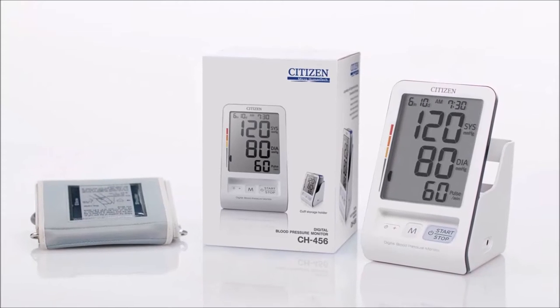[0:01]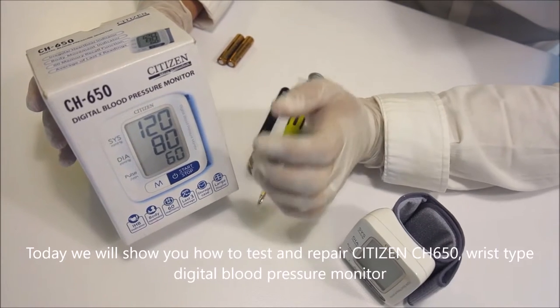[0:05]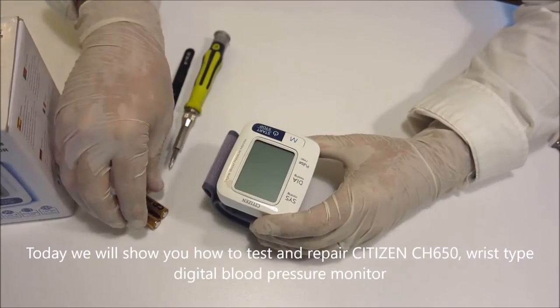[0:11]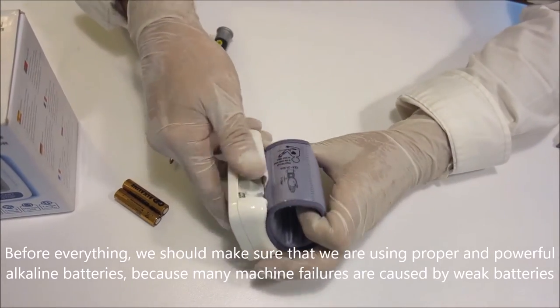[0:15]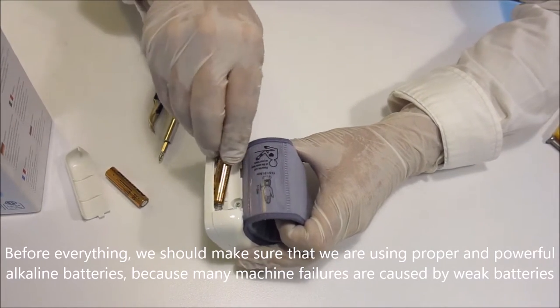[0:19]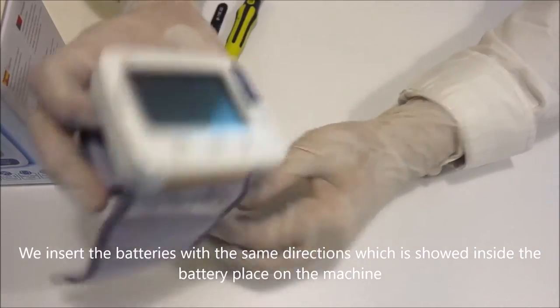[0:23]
Today we will show you how to test and repair the Citizen CH650 wrist type digital blood pressure monitor. Before everything, we should make sure that we are using proper and powerful alkaline batteries, because many machine failures are caused by weak batteries. We insert the batteries in the same direction as shown inside the battery compartment on the machine.
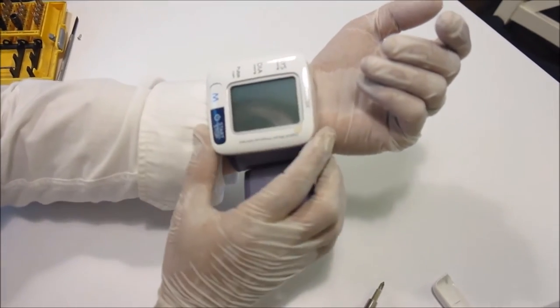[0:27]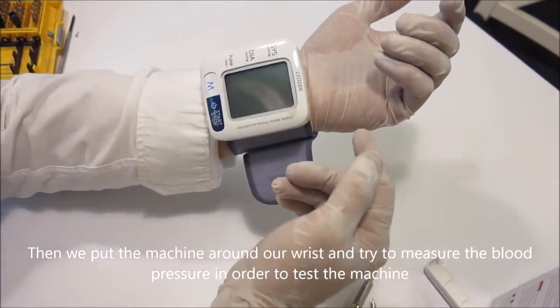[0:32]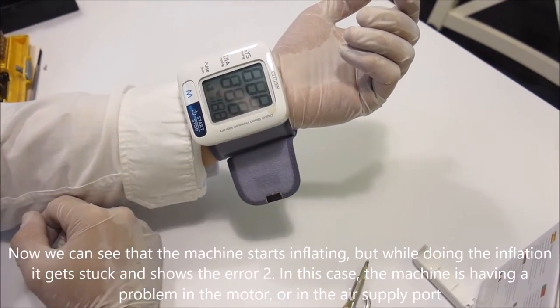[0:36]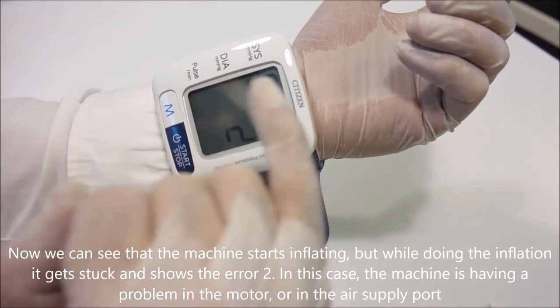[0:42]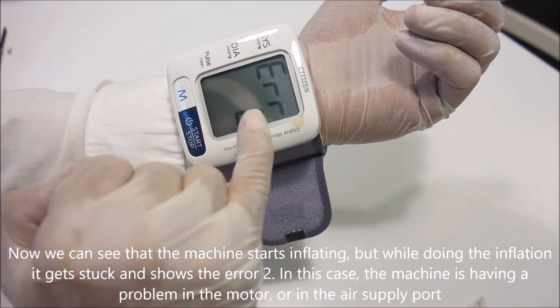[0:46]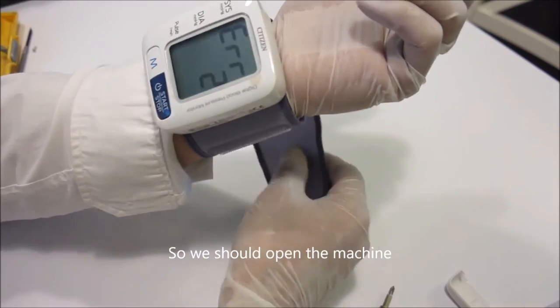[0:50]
Then we put the machine around our wrist and try to measure the blood pressure in order to test the machine. Now, we can see that the machine starts inflating, but while doing the inflation it gets stuck and shows the error 2. In this case, the machine is having a problem in the motor, or in the air supply port. So we should open the machine.
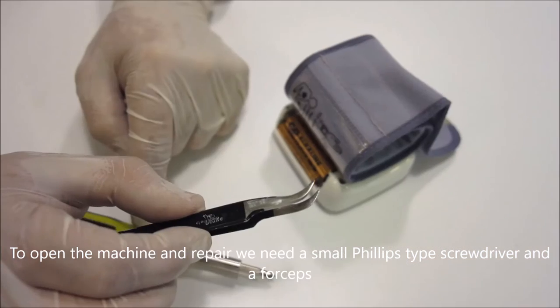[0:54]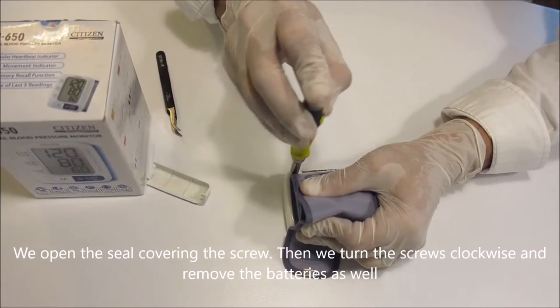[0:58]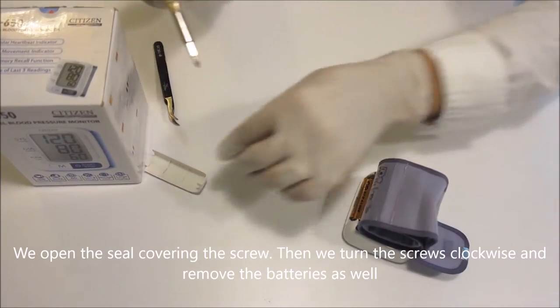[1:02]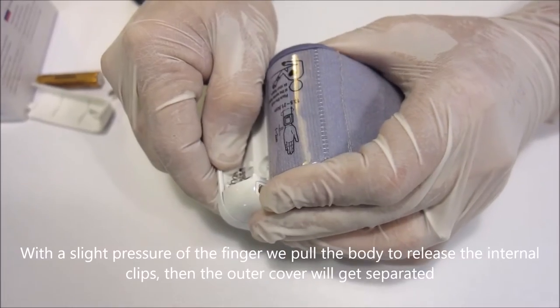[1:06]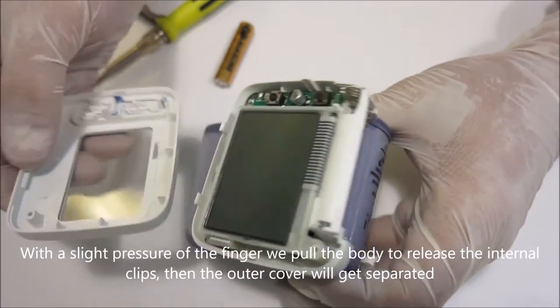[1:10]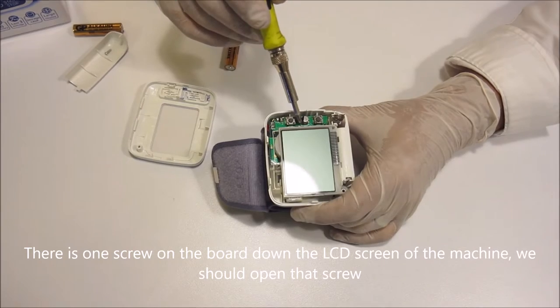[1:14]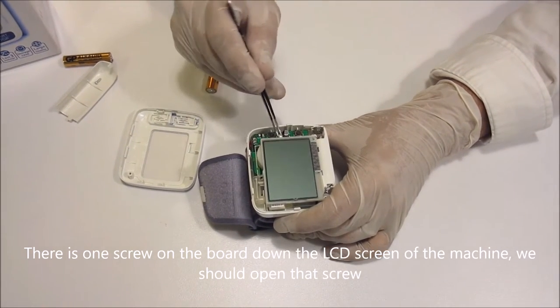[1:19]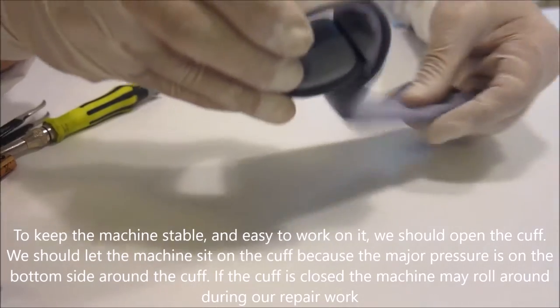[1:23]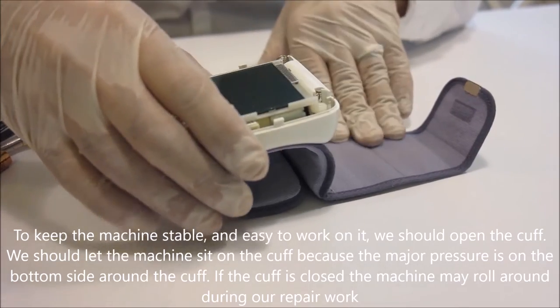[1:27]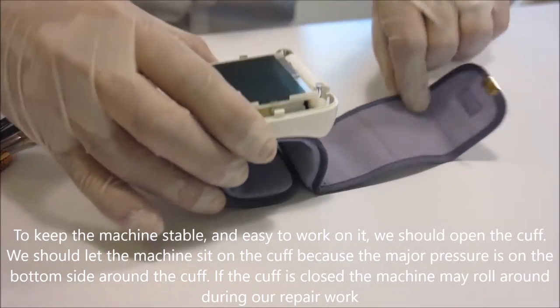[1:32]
that screw. To keep the machine stable, and easy to work on, we should open the cuff. We should let the machine sit on the cuff because the major pressure is on the bottom side around the cuff. If the cuff is closed the machine may roll around during our repair work.
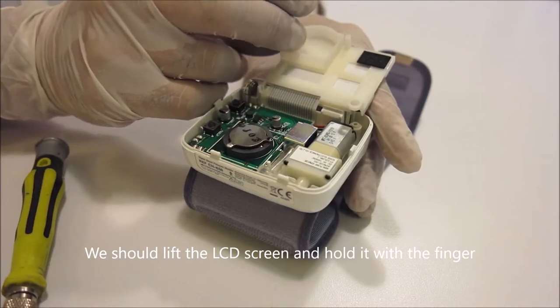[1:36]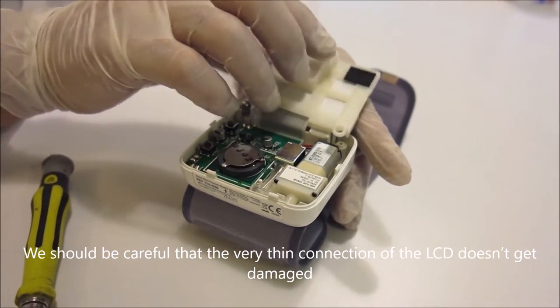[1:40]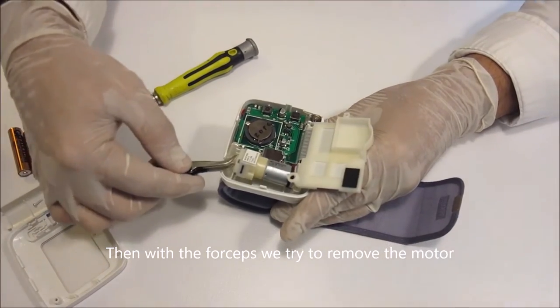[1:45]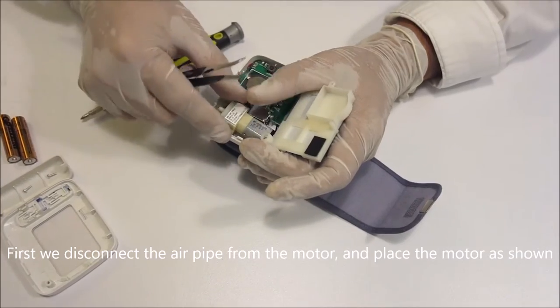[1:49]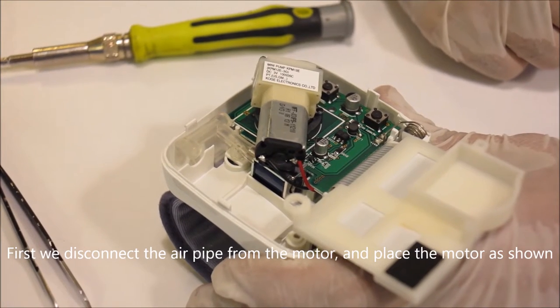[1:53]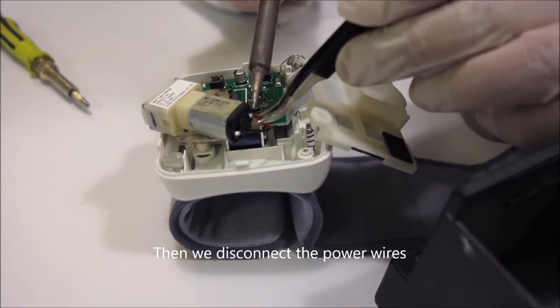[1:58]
We should lift the LCD screen and hold it with the finger. We should be careful that the very thin connection of the LCD doesn't get damaged. Then, with the forceps, we try to remove the motor. First we disconnect the air pipe from the motor, and place the motor as shown. Then, we disconnect the power wires.
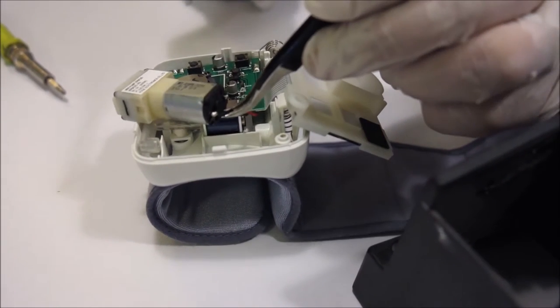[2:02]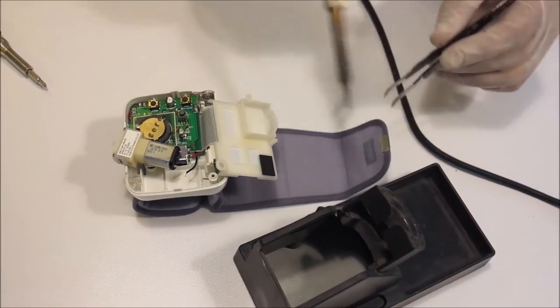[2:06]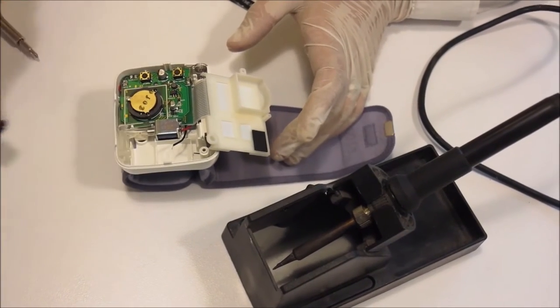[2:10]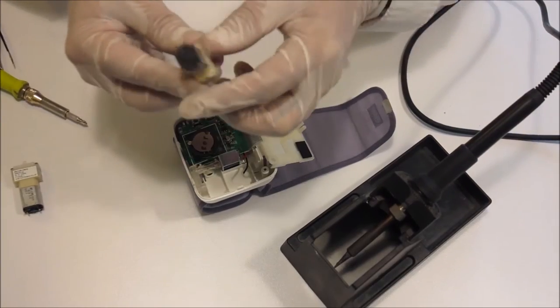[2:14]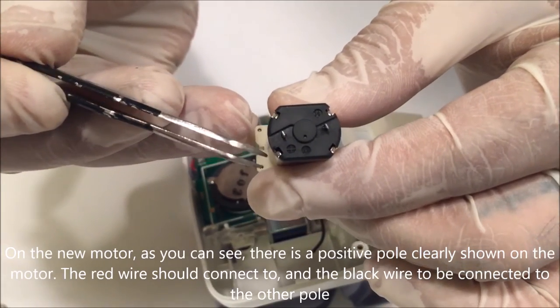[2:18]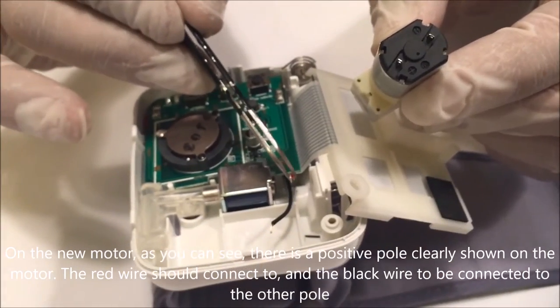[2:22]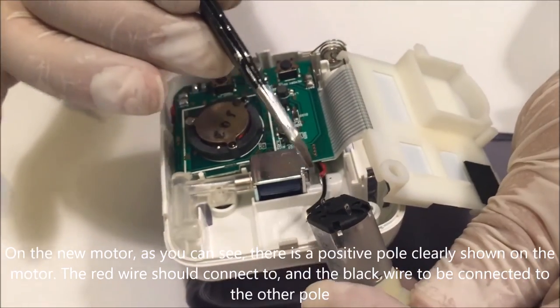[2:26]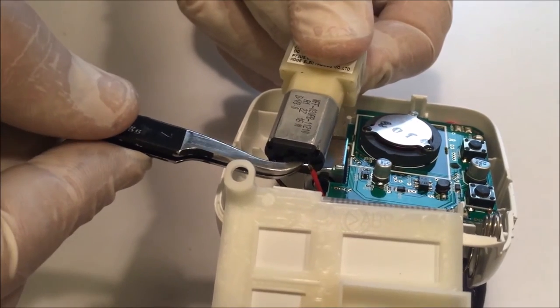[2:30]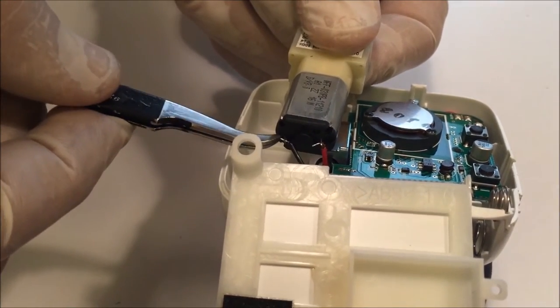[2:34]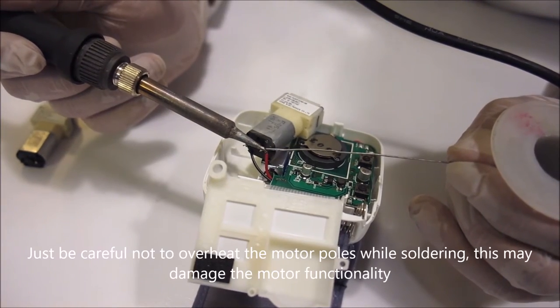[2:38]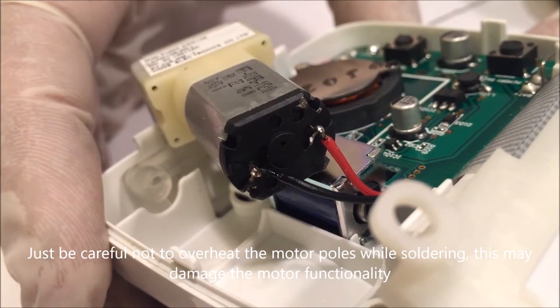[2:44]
On the new motor, as you can see, there is a positive pole clearly shown on the motor. The red wire should connect to it, and the black wire to be connected to the other pole. Just be careful not to overheat the motor poles while soldering, this may damage the motor functionality.
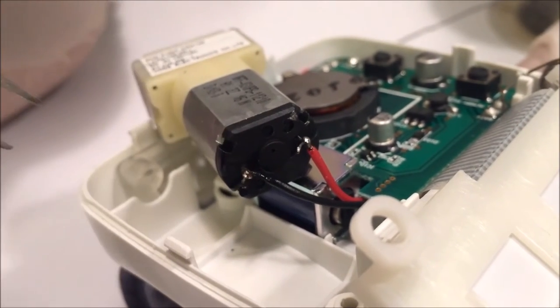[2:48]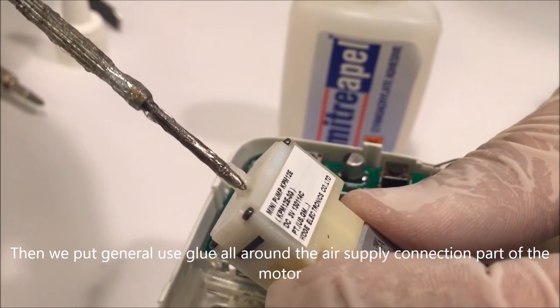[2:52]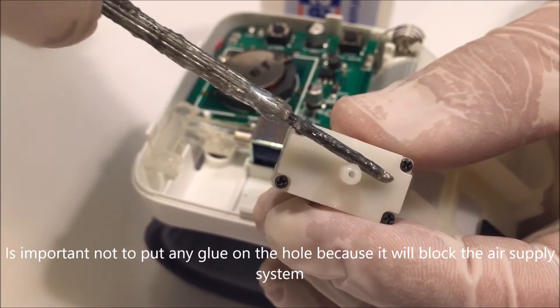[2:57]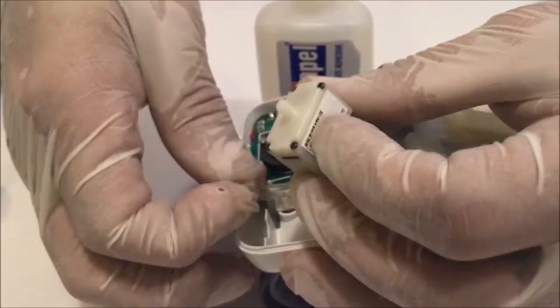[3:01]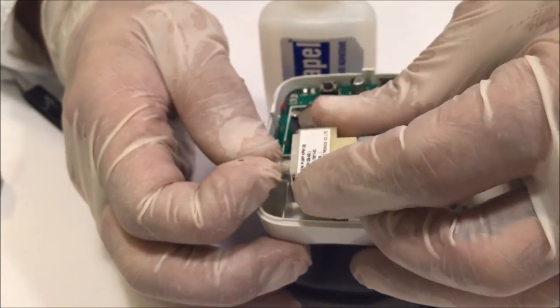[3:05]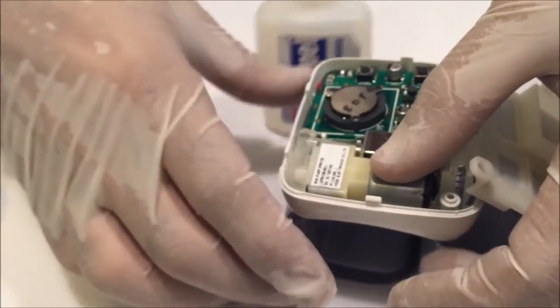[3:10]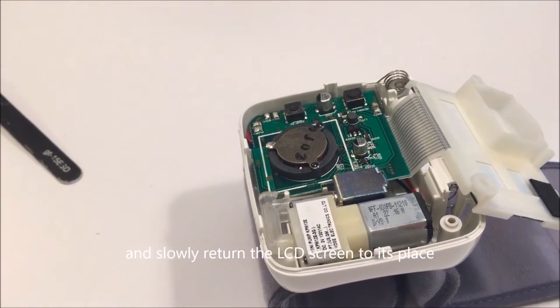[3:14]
Then, we put general use glue all around the air supply connection part of the motor. It is important not to put any glue on the hole because it will block the air supply system. Then we connect the pipe to the motor again. And slowly return the LCD screen to its place.
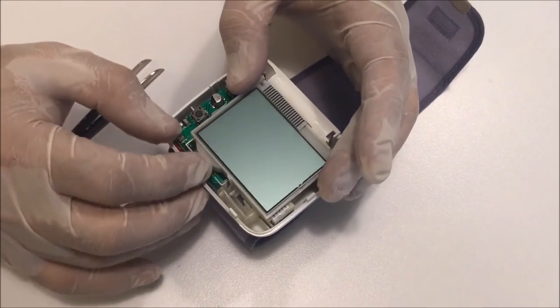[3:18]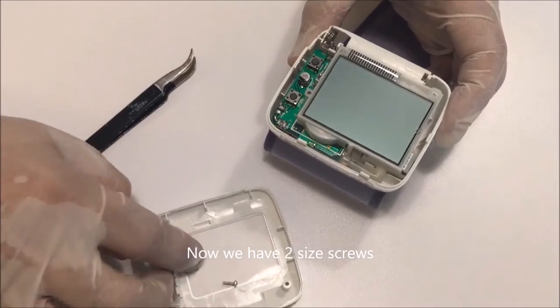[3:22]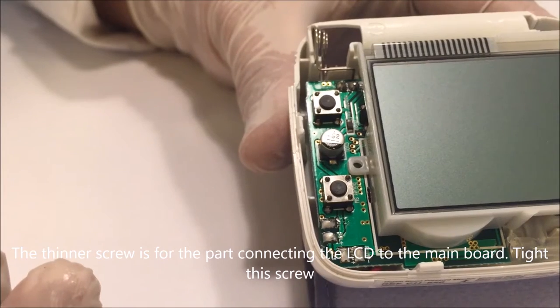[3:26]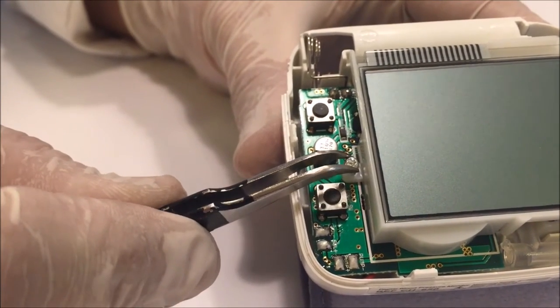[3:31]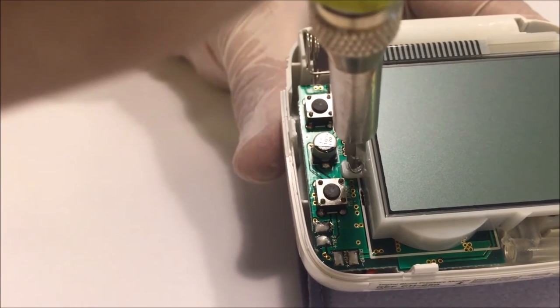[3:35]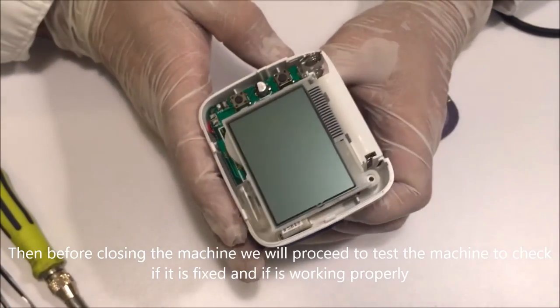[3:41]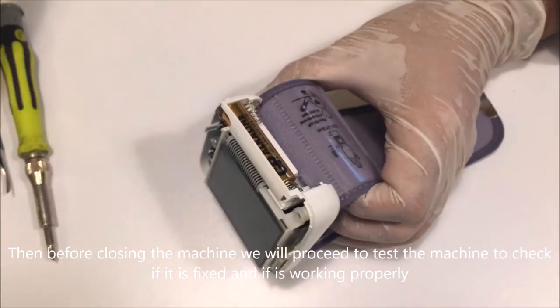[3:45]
Now we have two size screws. The thinner screw is for the part connecting the LCD to the main board. Tighten this screw. Then, before closing the machine, we will proceed to test the machine to check if it is fixed, and if it is working properly.
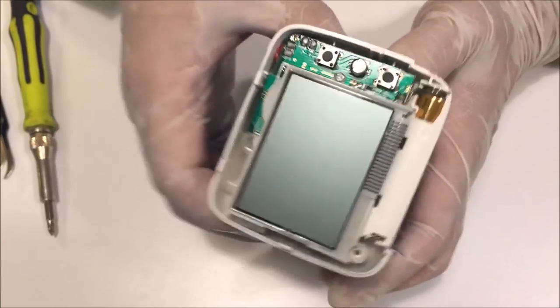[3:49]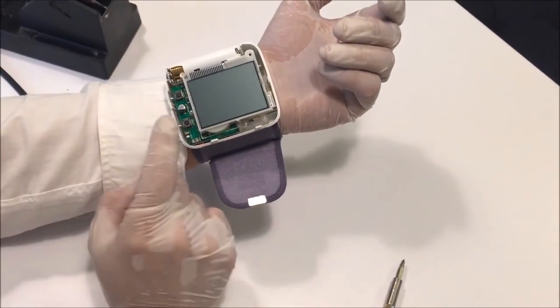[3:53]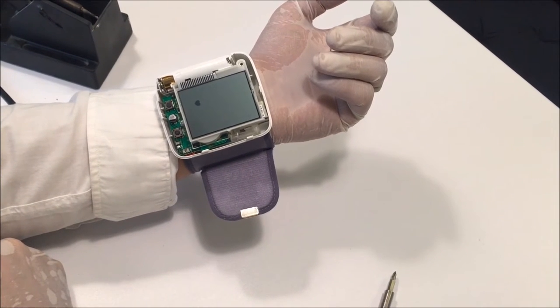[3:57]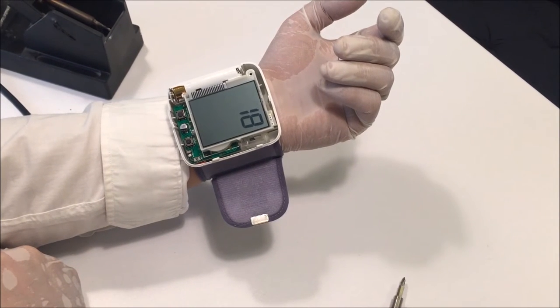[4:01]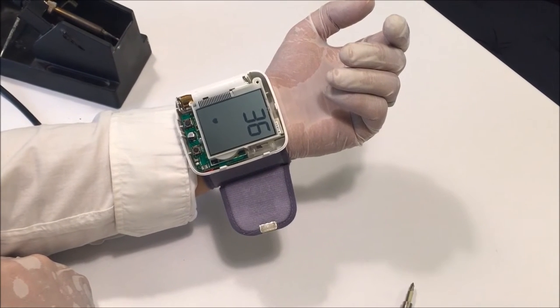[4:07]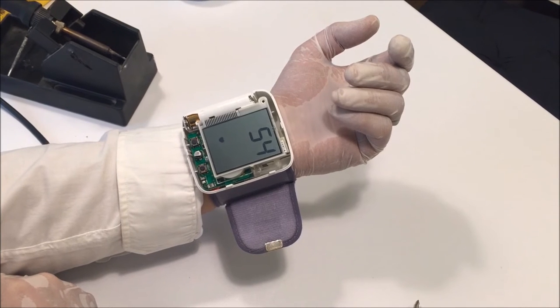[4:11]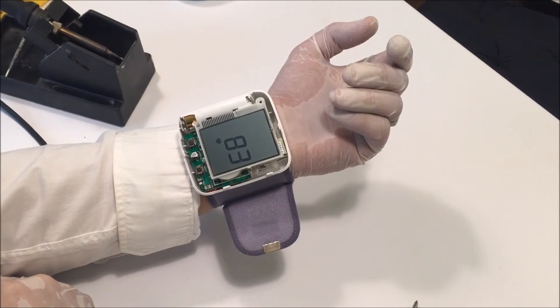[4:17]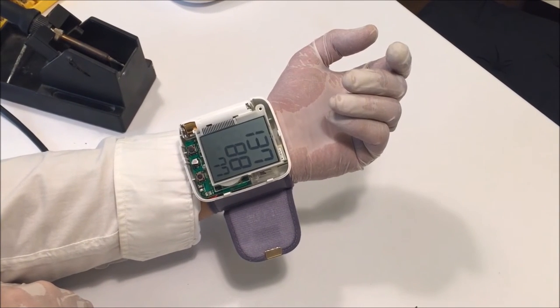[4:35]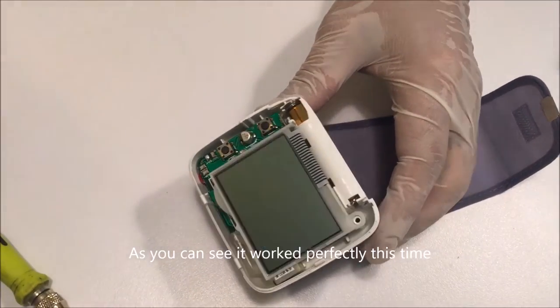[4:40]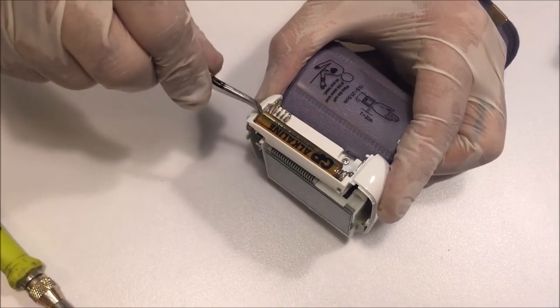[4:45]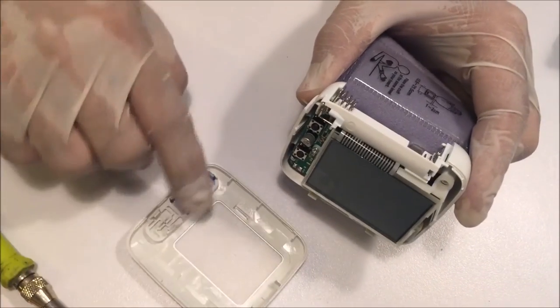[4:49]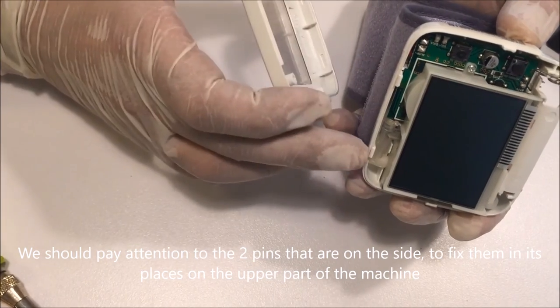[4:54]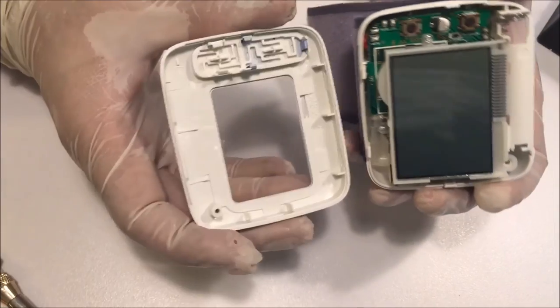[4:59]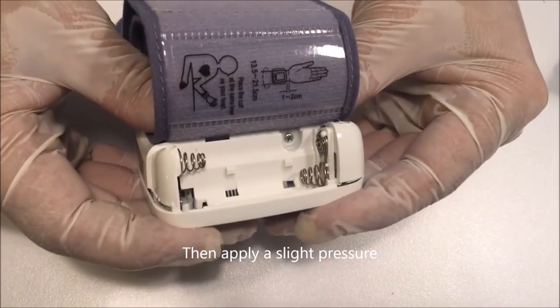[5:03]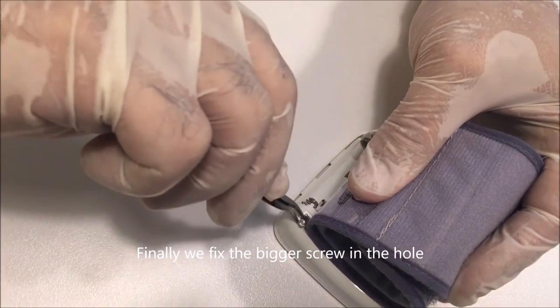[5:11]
As you can see, it worked perfectly this time. Now, we close the machine. We should pay attention to the two pins that are on the side, to fix them in their places on the upper part of the machine. Then apply a slight pressure. Finally, we fix the bigger screw in the hole.